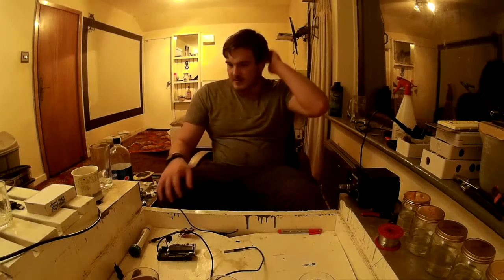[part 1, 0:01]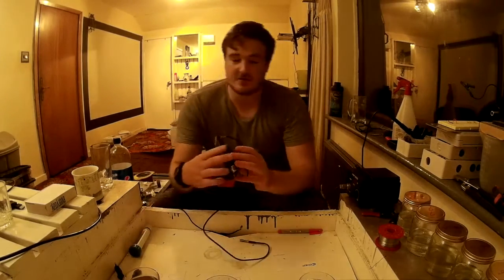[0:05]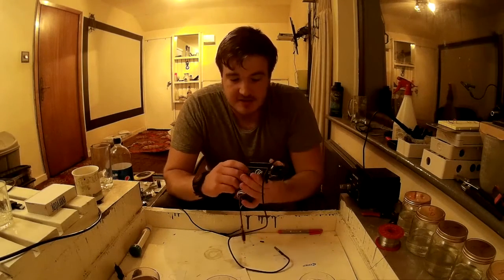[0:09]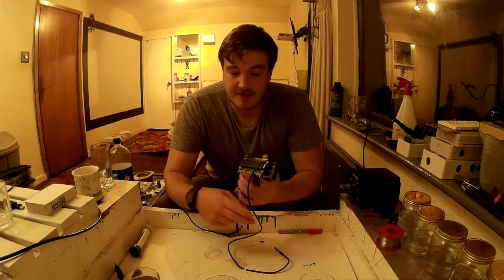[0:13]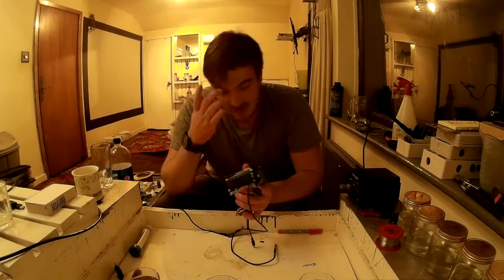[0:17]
This is Michael Ratcliffe, and this is just an updated version of the EC meter. What we've done here, we've added an LCD screen with buttons as a graphical user interface. We now save the calibration values into EEPROM so it'll survive restarting it.
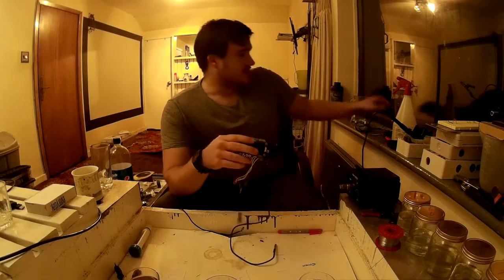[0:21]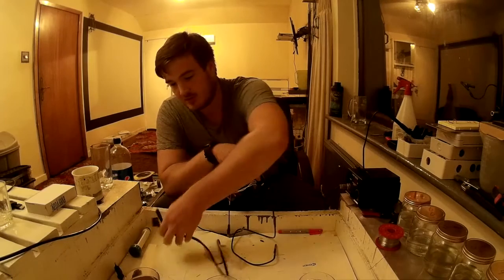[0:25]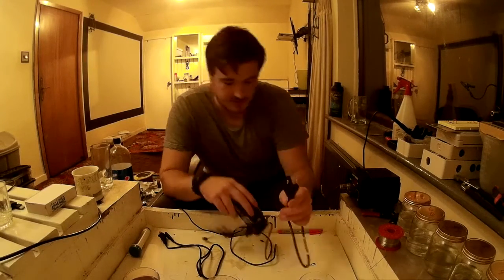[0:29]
And we've added support for... We had support for the American plug. Now we've got support for the European plug as well. You wire it up like on the diagram that's on the screen now.
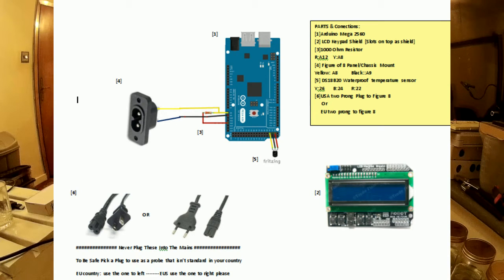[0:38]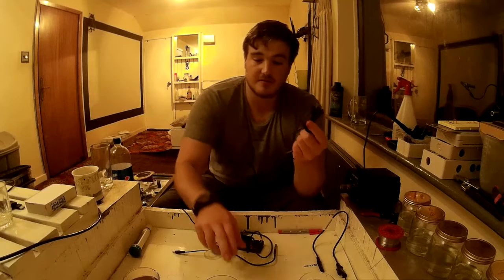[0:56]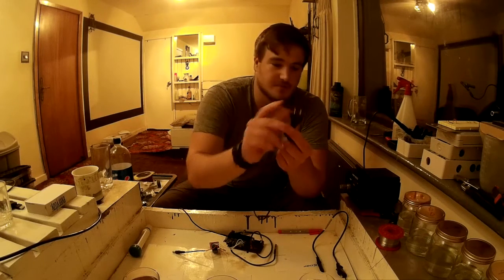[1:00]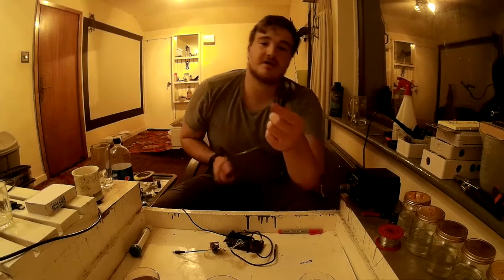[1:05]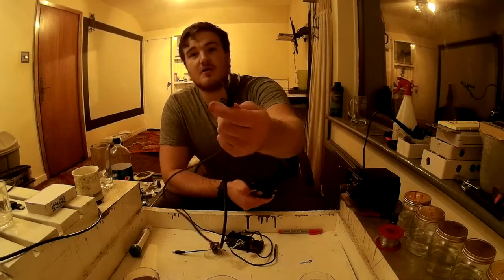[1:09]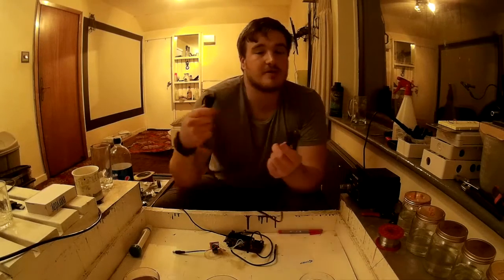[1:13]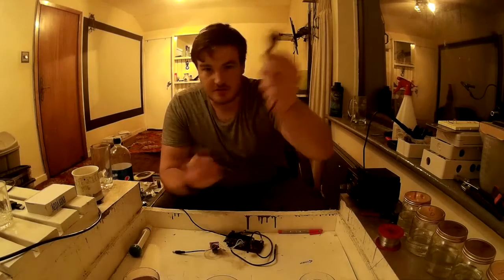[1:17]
The way it works is it measures the EC and PPM, the nutrient strength of water, by measuring the resistance between these two pins on either the American or the European plug. Now, because this goes to the analog pin, as you can see, you never want to plug this into the wall. So if you're in America, I recommend using the European plug. If you're in Europe, I recommend using the American plug, just so you've got no sockets you can plug it into and there's less chance of a mistake.
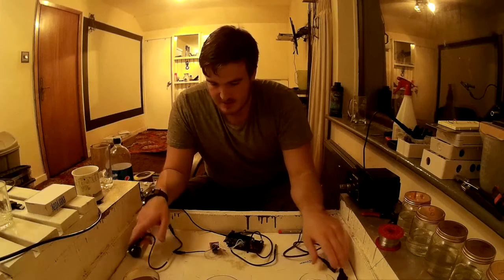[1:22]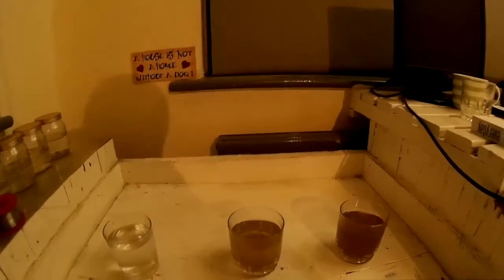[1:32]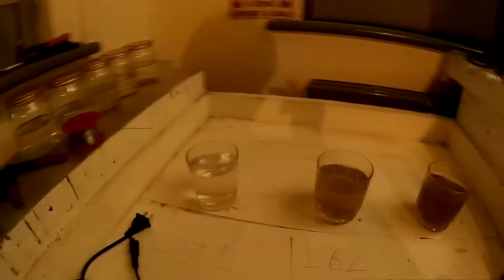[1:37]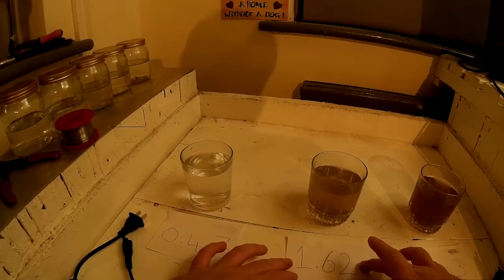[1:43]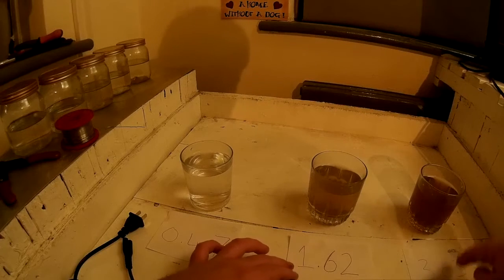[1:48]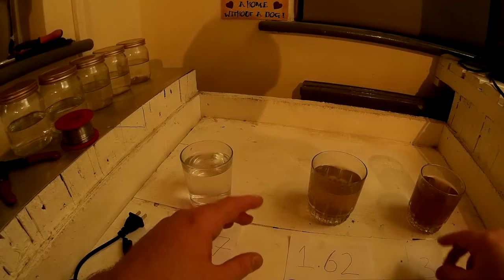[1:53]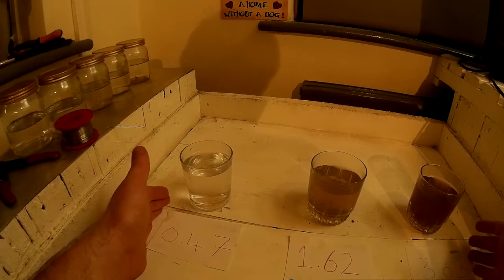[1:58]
Now let's have a look at what we've got here. If you want to see any other stuff, follow the link to the original blog where we talk about the theory about how it works. What we've got: tap water, middle strength nutrient solution, and a high strength. The EC is just a number to say it's electrical conductivity. Pretty much, if you're growing in aquaponics, this is the maximum range you're ever going to see.
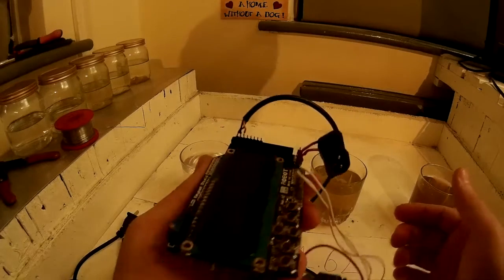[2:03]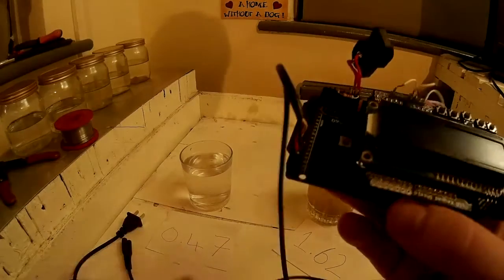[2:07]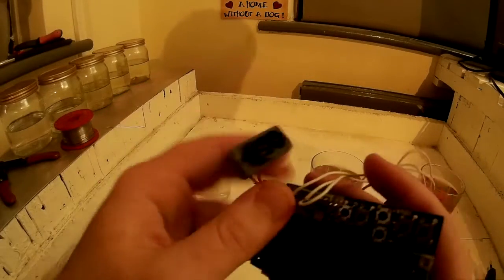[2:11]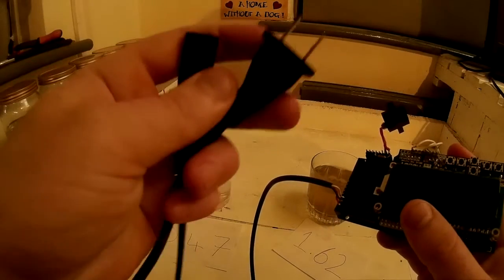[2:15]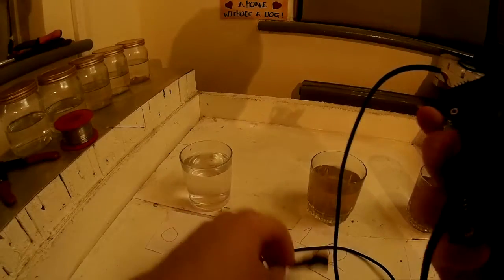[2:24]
So let's talk about the probe. What's it got? It's got a waterproof temperature sensor wired up to the digital pins. It's got a voltage divider and a figure of eight gland on. So when you get these plugs, you want an American two prong on one side or the European two prong and a figure of eight on the other, so we can quickly plug in probes like that. Because if these were fixed, we won't quickly be able to take them out and replace them.
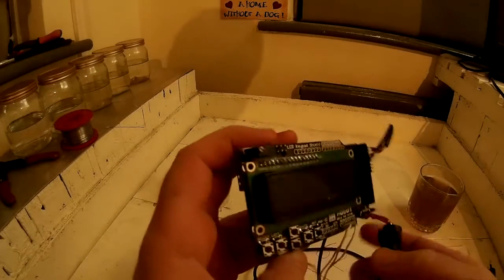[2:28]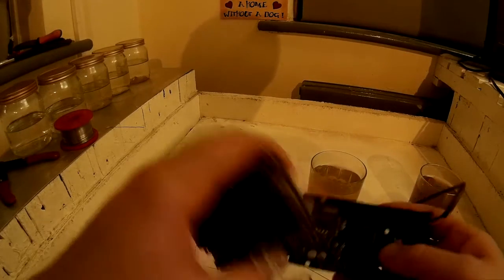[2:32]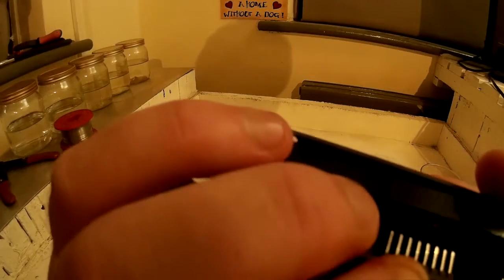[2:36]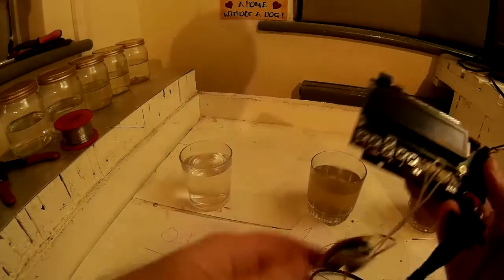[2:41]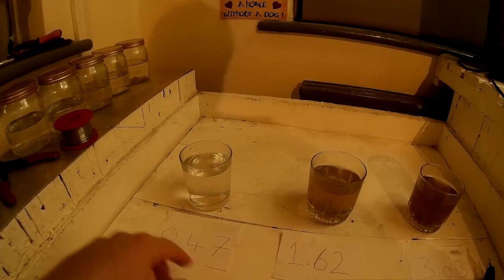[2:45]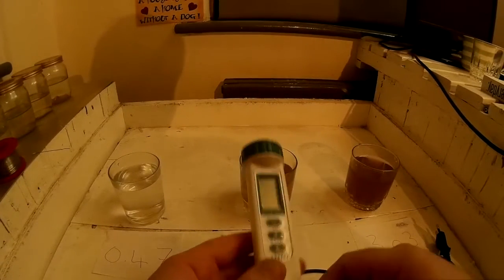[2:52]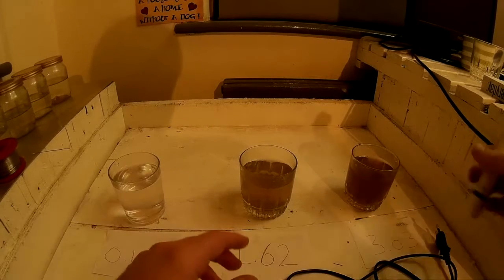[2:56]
The LCD shield's just a generic LCD shield with buttons. You need the one with buttons, it just pops off and on like that. Very easy. Very cheap as well, just I think $3 on eBay will get you one. So let's pop it into the middle one. These values are calculated using this commercial TDS meter. It's not been calibrated in a while, but it gives a good indication of what values we should expect.
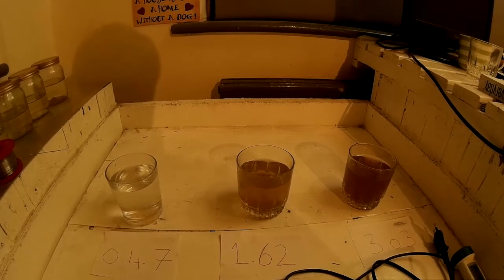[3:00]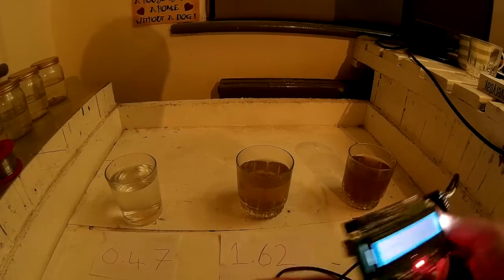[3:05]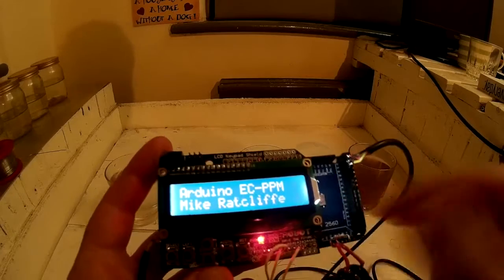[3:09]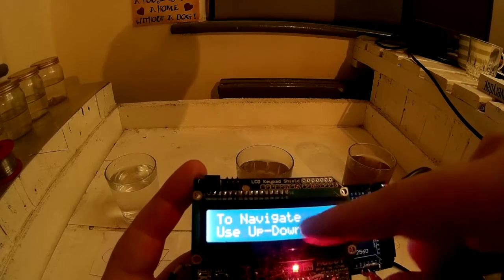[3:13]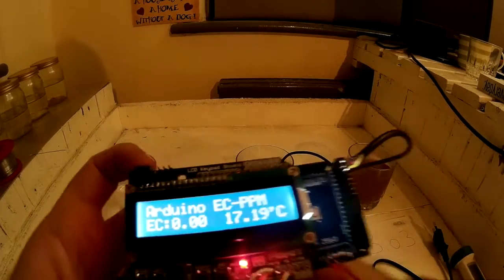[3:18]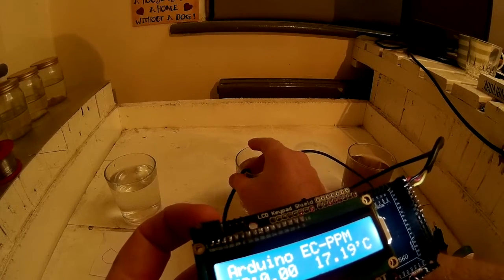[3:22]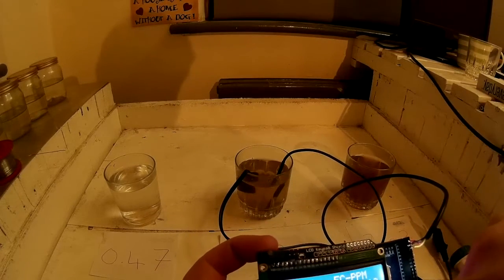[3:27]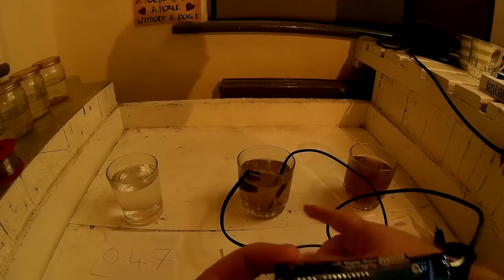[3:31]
So take your power and plug it into your Arduino. And the startup routine should be like that. Tells you what it's doing, how to calibrate it, and how to navigate. So let's drop the temperature probe in there. And the EC probe. Now this is saying 1.57, as you can see. It's 1.62, so it's pretty close.
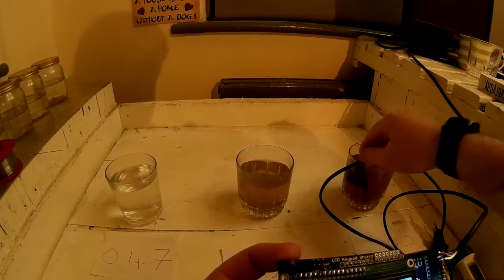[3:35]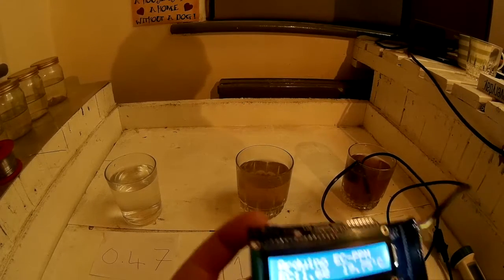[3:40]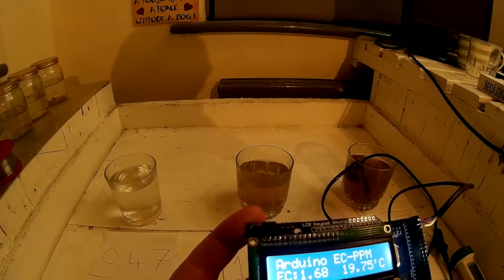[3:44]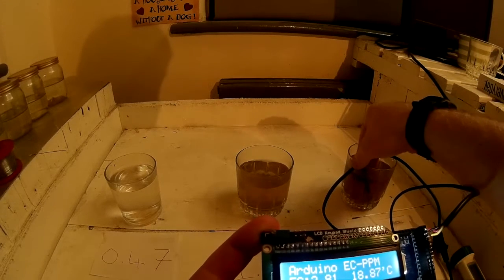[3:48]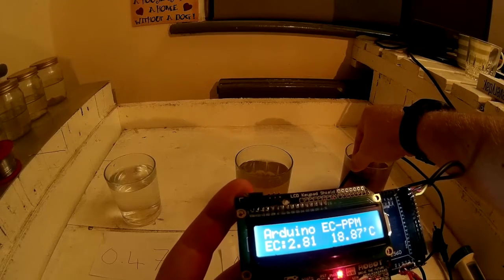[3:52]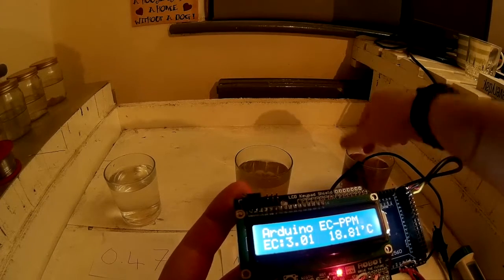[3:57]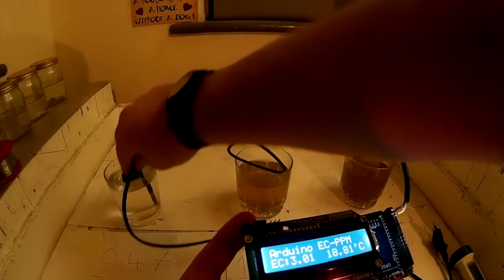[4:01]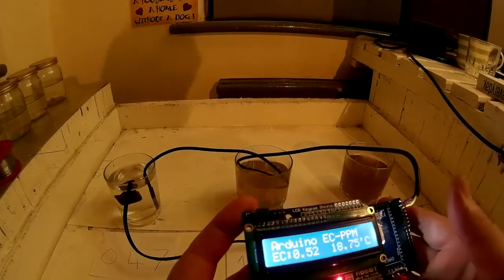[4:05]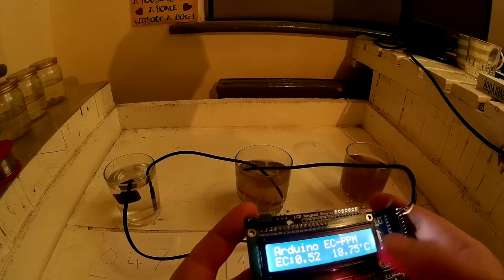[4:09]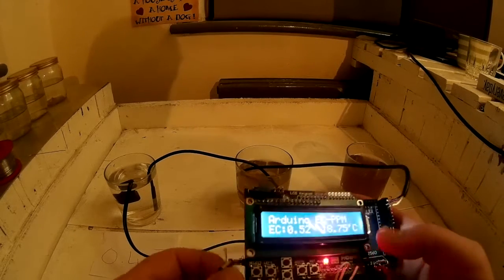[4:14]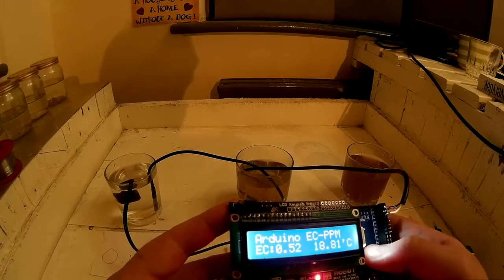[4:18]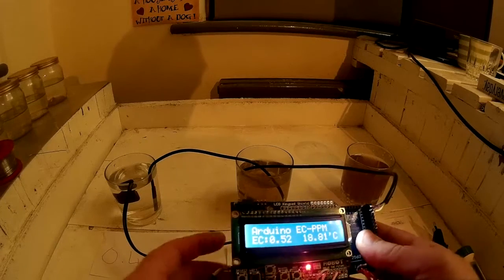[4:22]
The next one, it should change to 3.0. Let's give it a bit of time to settle the temperature. 3.01, almost bang on. And this one to the far left, we're just putting it in, should be 0.5-ish. Well, 0.47. 0.52. It's not too far off. So as you can see, it does work quite well. Now, we've also programmed the calibration value to be stored in the EEPROM. So if you power this off and power it back on, it'll still be calibrated, which is quite useful.
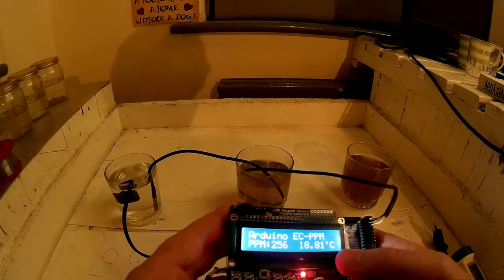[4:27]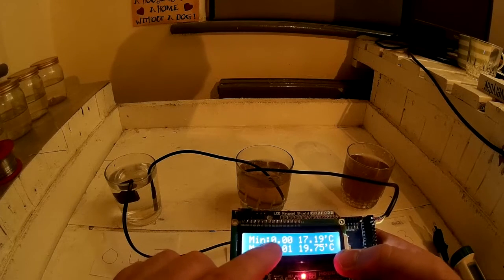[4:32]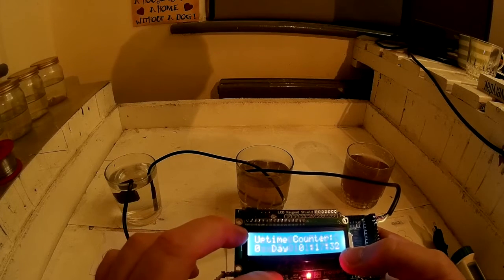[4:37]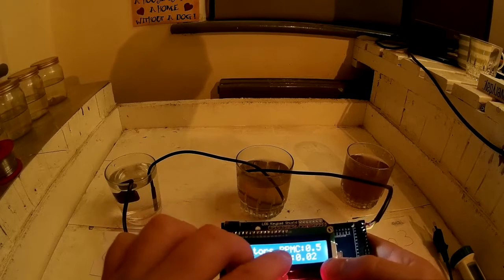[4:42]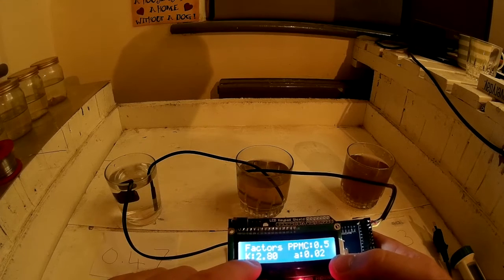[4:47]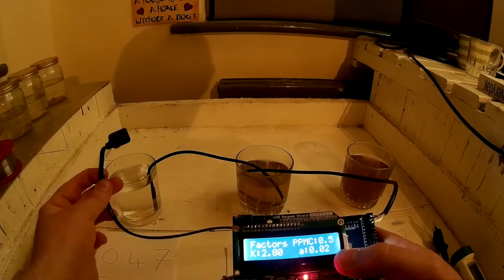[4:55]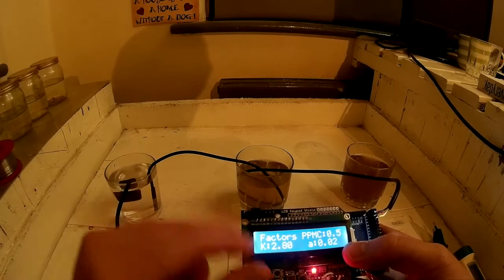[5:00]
Let's just run through what the options are. If you click up, first reading, it'll tell you the PPM, the minimum EC it's read, and the minimum and maximum temperature, an uptime counter so you know if that data is relevant, and these are the factors. So that's your PPM conversion factor, that's I think the Australian one. This is your calibration factor for the probe, 2.8, which is very similar to the other American style plug I got, which I cut the end off. So you can say that they're pretty similar.
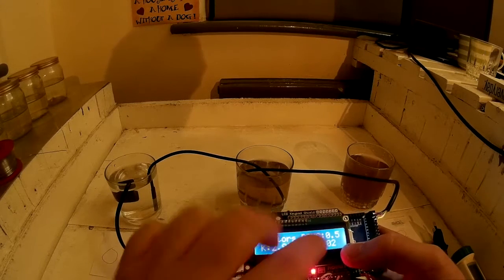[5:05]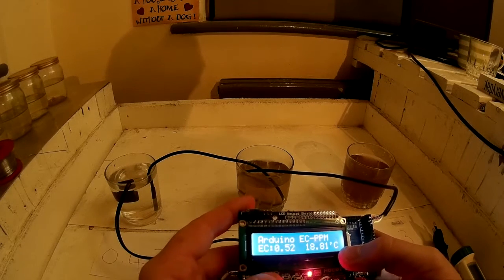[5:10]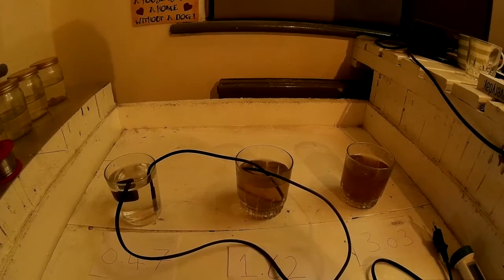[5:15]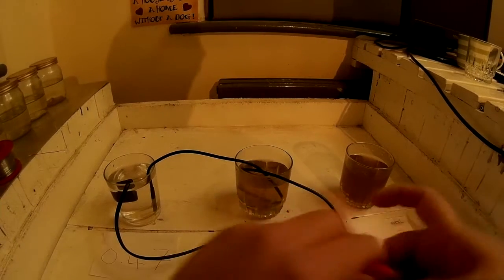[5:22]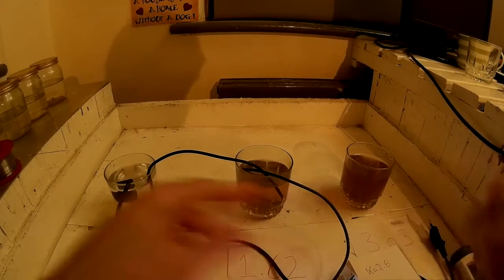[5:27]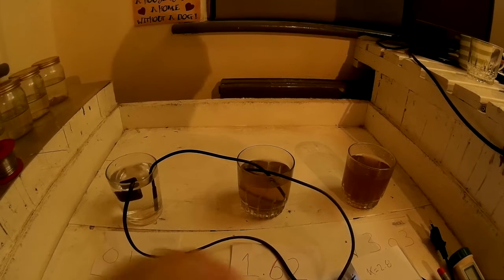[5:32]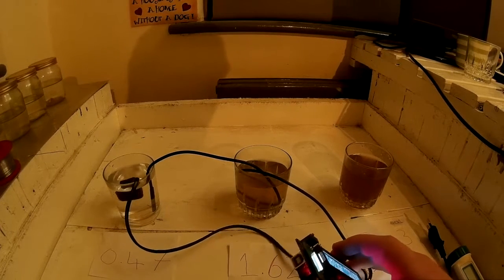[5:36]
And this is the temperature coefficient. You can stick with these two as standard, and this one's the one you're going to change. So what's the K value there? K value is 2.8. Just to check that this value gets stored in EEPROM, we'll write it down here, 2.8. Now let's try with the American probe, with the European probe, sorry.
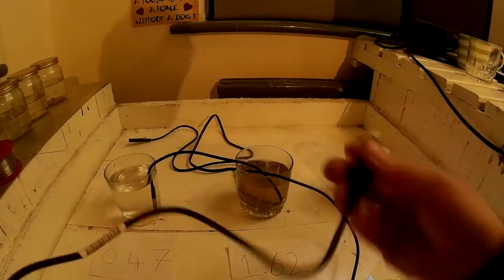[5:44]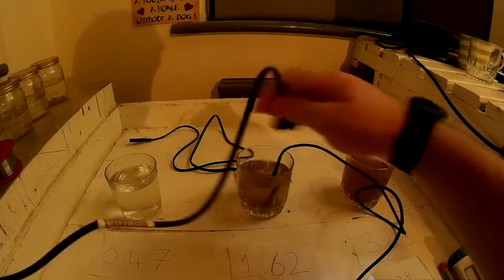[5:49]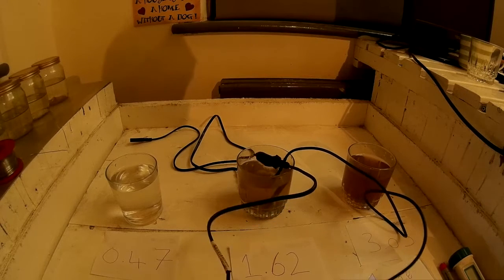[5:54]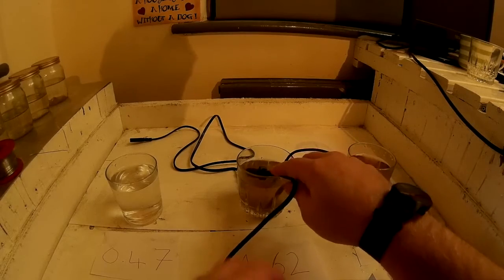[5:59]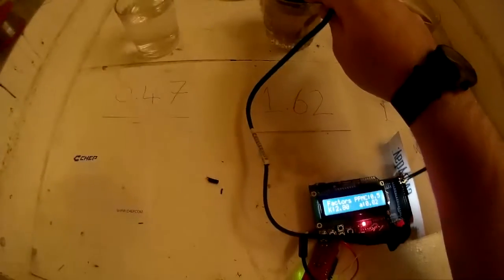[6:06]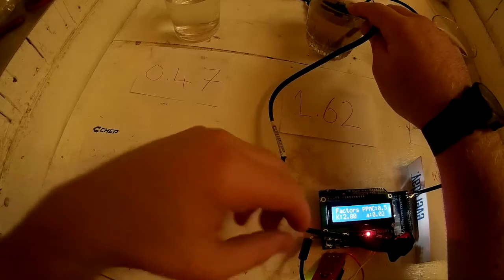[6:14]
So let's unplug the American plug and move it over there. Now we're going to plug the American plug in and calibrate it in this one, because you want to calibrate in the middle value you expect to see. So when you started this up, it said hold select to calibrate. So we'll hold the select button once I get the camera steady.
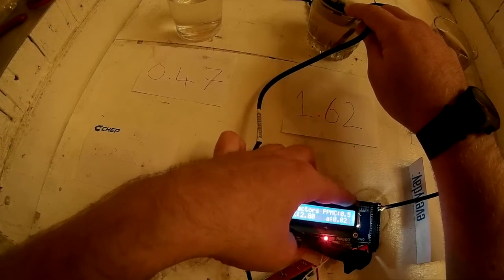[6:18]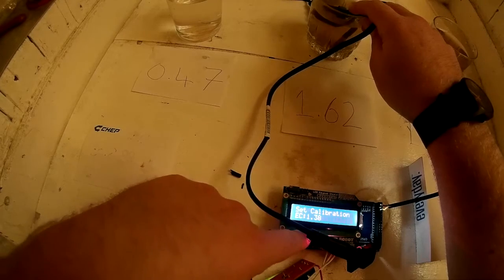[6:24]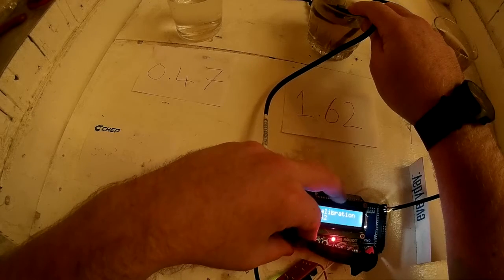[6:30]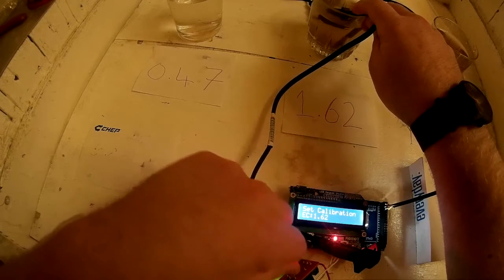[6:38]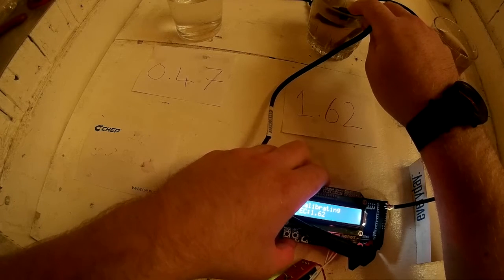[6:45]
Set calibration. So we press up and down. We're calibrating it in 1.6. So we just keep pressing up until it equals 1.6. 1.62, and then we click right to calibrate. So it's saying it's calibrating. This will take 60 seconds, so I'm going to cut the video and make it come back on in 60 seconds.
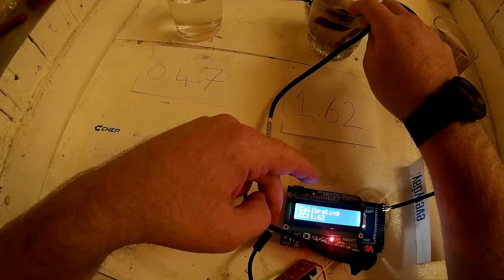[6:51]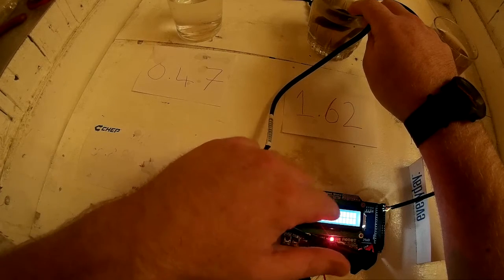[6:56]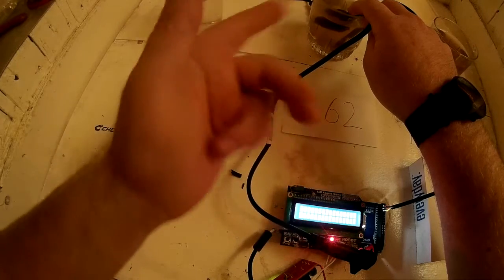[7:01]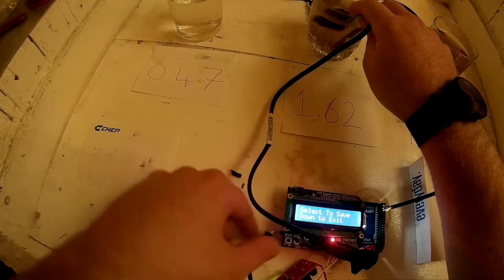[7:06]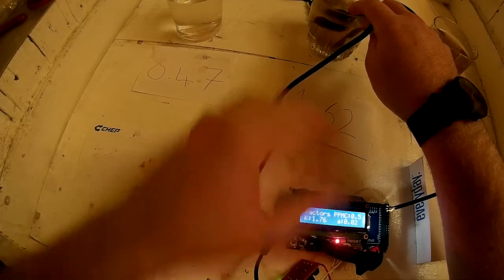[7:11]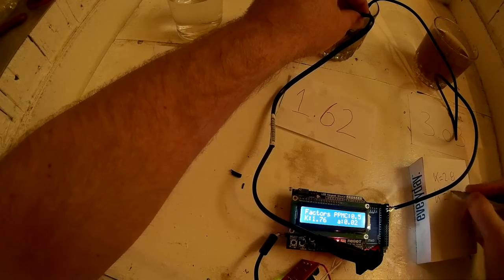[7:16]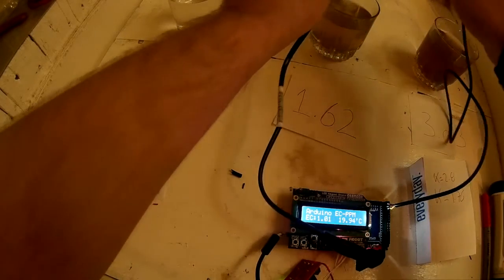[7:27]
Right, so it's calibrated, so it's telling us good result. The new K value, the cell constant, is 1.76 because it's a completely different probe. Good result. Select to save, so we press select and it's saved the calibration as 1.76. So let's just note that down. The new K is equal to 1.76. And click back down to get to EC. So what's it saying? The EC is 1.64. It should be because we calibrated.
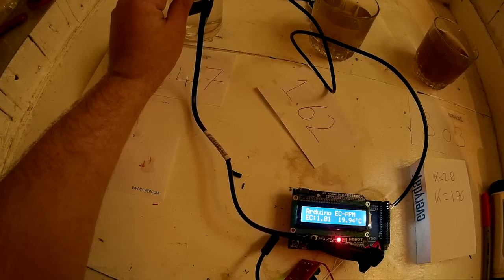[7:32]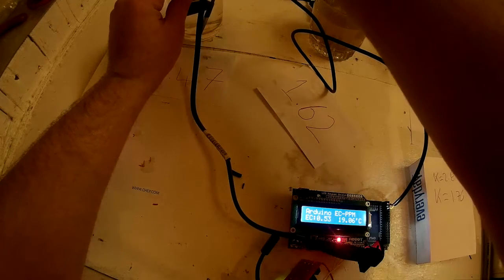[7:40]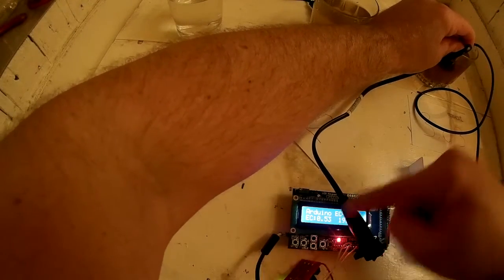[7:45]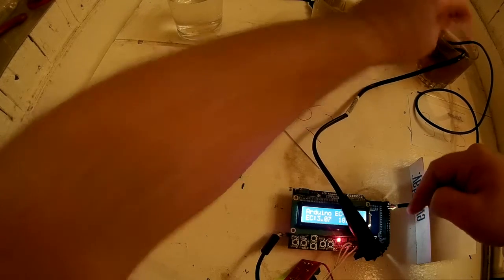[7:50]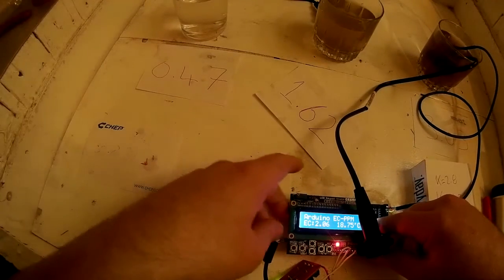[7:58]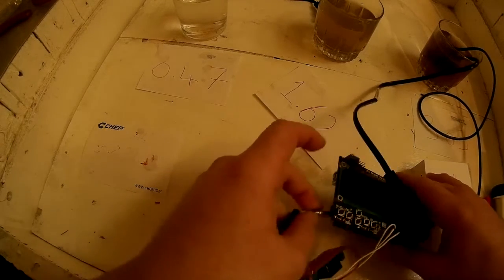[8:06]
Let's try the 0.47. So as you can see, it's pretty close. And let's try it in the solution of 3. That value now should change to 3, which it has. So once it calibrates, it runs quite well. Now let's just double check the EEPROM thing is working. We'll press the main reset button on the Arduino board. If it worked. We'll just unpower it and power it back on.
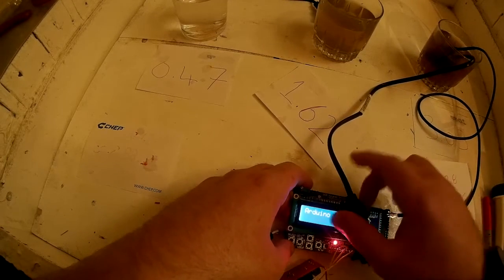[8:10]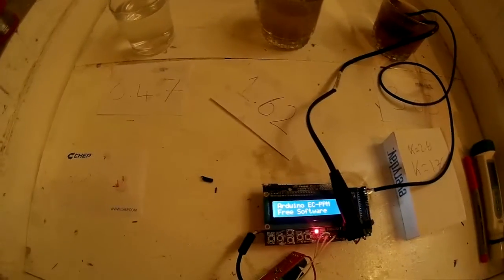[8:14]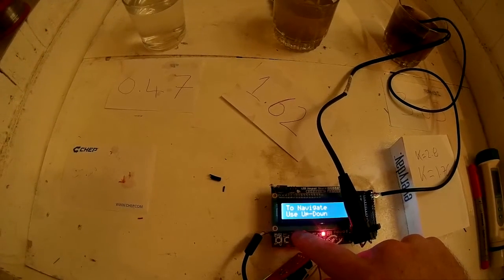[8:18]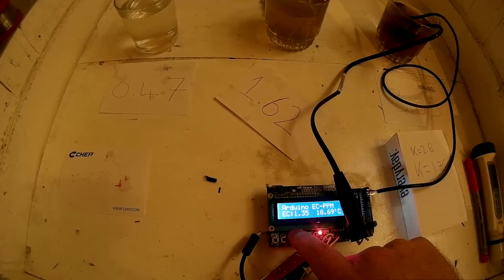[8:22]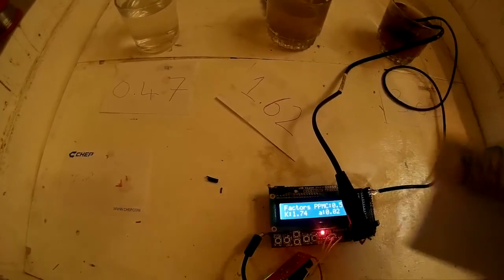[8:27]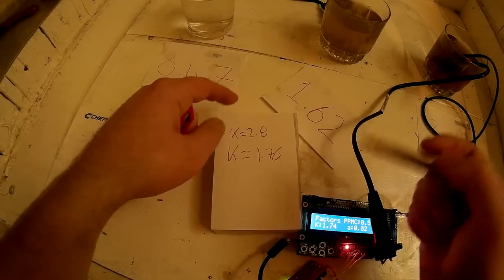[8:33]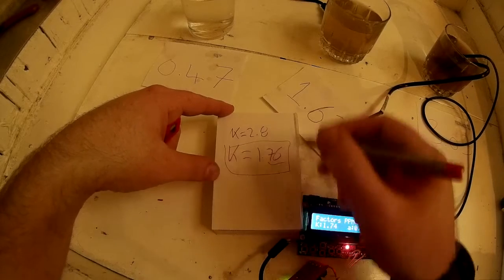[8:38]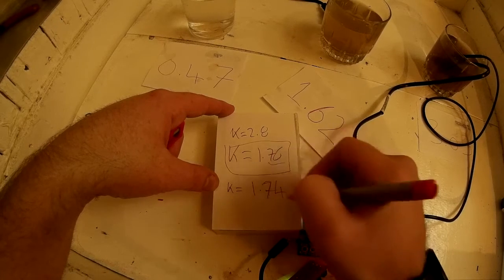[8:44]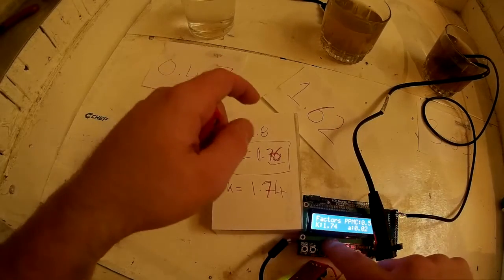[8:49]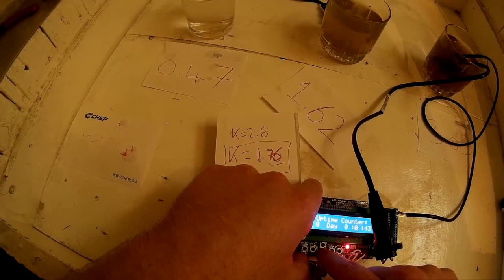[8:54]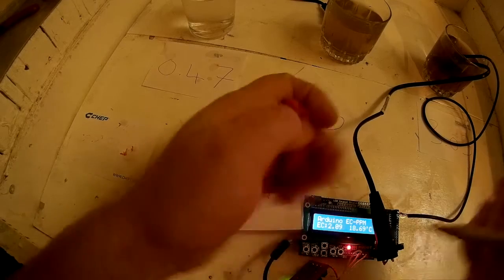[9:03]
Let's run right up to the top. The K value is 1.76. We put it in as that, and because we're saving in EEPROM as an int, times by a constant, it's lost a bit of fidelity. So this is the actual cell constant, but it thinks that it's 1.74, which is a very small difference. So we know the EEPROM saving is working. You're just going to have to believe me that the uptime counter works, because I've not got time to make a video just watching the uptime counter climb.
Anyway, thanks for watching the video. So now you've got two probes you can choose from, and an Arduino which saves the calibration value. And in the next tutorial we'll be making a self-learning nutrient doser from this. So that means you'll have a self-learning nutrient doser for your hydroponics unit for around $15, which is much cheaper than the commercial unit. Watch the next video.
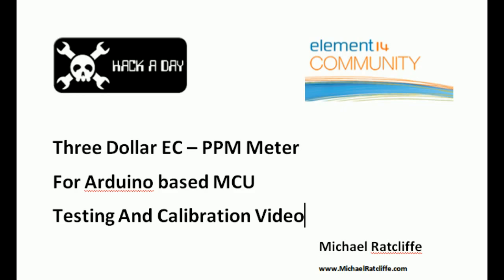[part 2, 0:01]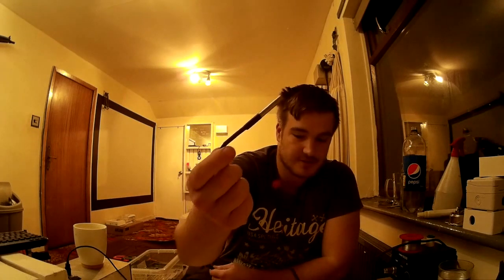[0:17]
Hello, this is Michael Ratcliffe, and today I'm going to be showing you how to make an Arduino based EC meter for £2. What you'll need: a waterproof temperature probe. Everyone should have one of these. If you don't have one, you should order 10. And an American style 2-prong plug as an EC sensor.
Because these are sold all around the world as a good standard, the pins will always be the same distance apart. They'll always be the same sort of stainless steel material, so they're pretty standard. So when I calibrate this, you should be able to make the exact same one anywhere in the world, and the calibration will stand roughly. You can calibrate your own if you want, like I'm going to do in the video now, but if you just want something that'll plug and play and be about right, you won't even need to calibrate it.
Follow the wiring diagram on how to wire it up. I recommend getting an extension lead with the American plug on one end and this on the other, and buying the male or female, I can't remember which one it is, counterpart to this figure 8, so that when you want to change the EC probe, you don't have to resolder onto a header. You just unplug this and plug your new one in to decrease downtime. Now, I've got one in the post, but for now, because this was just proof of concept, we're using this.
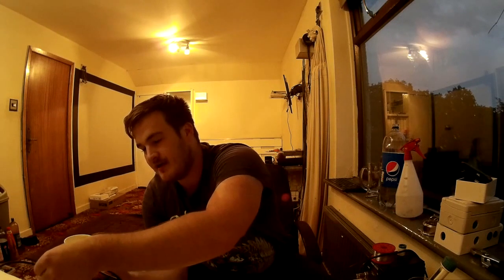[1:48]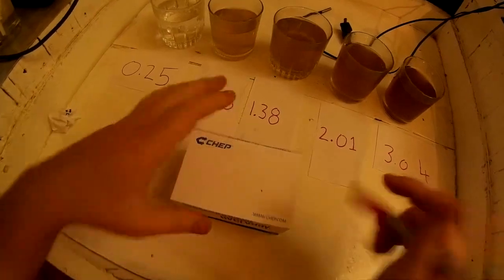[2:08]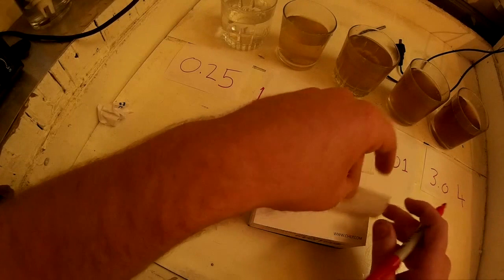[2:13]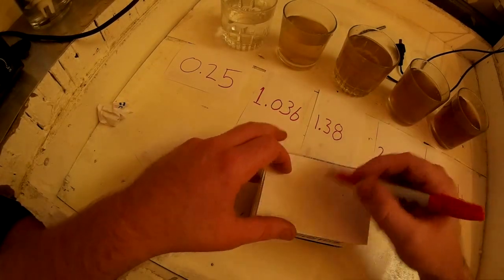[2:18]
Now, usually you can't measure EC using DC probes because you polarise the water as soon as you do. And by polarise the water, we mean you move the ions in the water, so you can't take a DC measurement. Let's just plot what happens if you try to take a DC measurement of water EC.
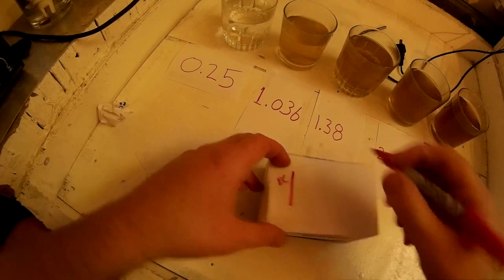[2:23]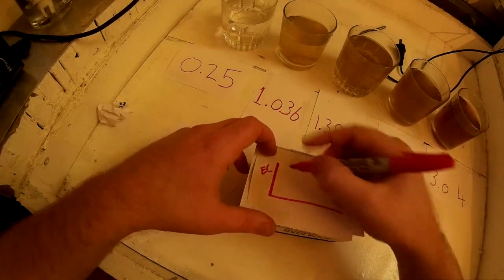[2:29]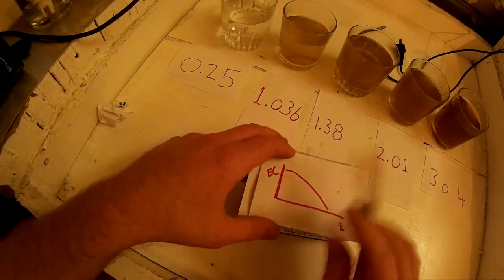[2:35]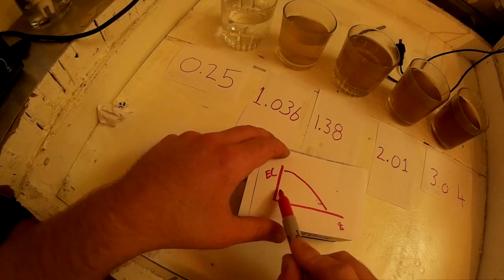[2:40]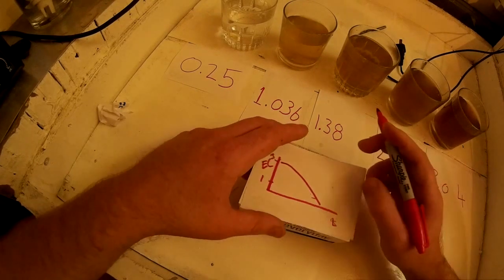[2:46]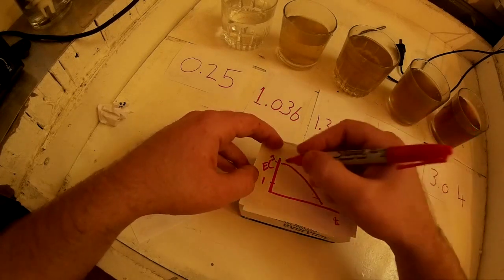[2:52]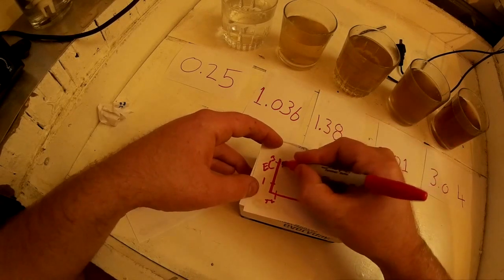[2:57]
This is your EC measurement, your resistance of the water. I can't remember whether it's a positive or negative relationship, but this quickly happens when you try and take a reading, and this is time. So if you just try to take a DC reading and left it turned on, your EC reading would be wrong, because it would tell you there's an EC of, I don't know, 1, when in fact it's 3. So we get around this by connecting the EC meter to the digital pins of the Arduino, turning power on just for this short period here. So we turn the power on, take a reading quick, and turn it off, so this bit doesn't happen anymore.
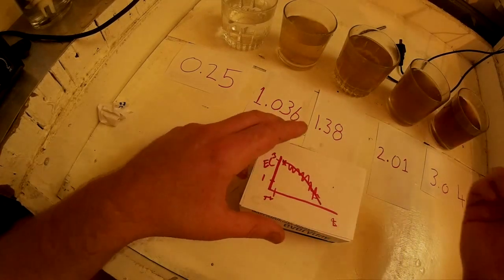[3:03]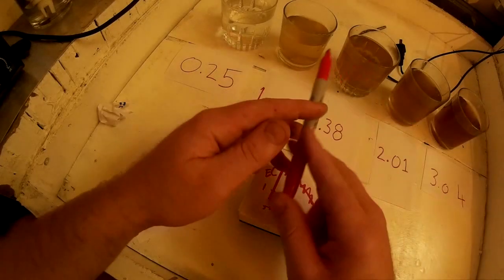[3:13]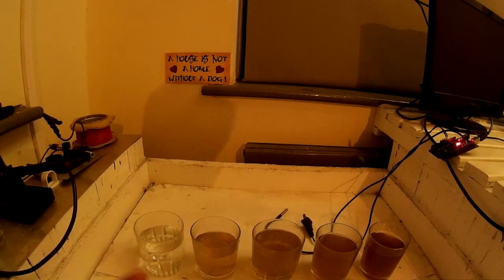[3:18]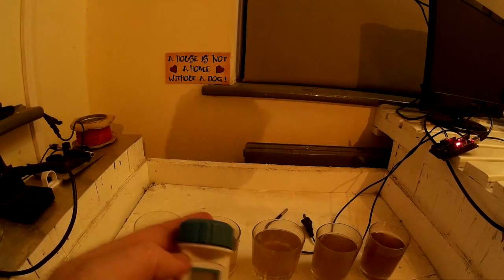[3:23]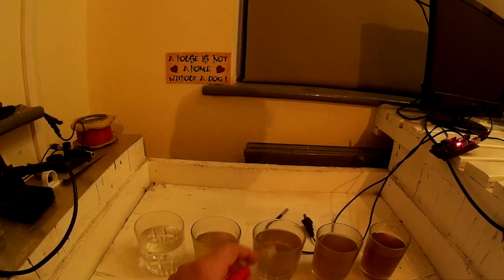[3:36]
The wiring diagram will be on the screen now, and just to show that it works, right in front of me here I have got a range of water samples. We've got my tap water, which using this meter here is 0.25 EC, a 1.38, which is quite a common strength for calibrating EC meters, which we'll be doing now.
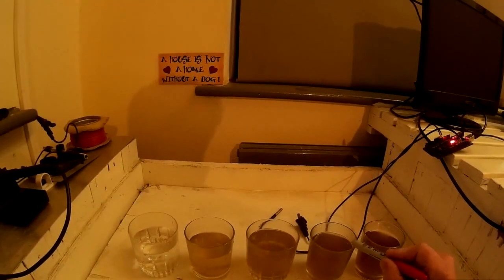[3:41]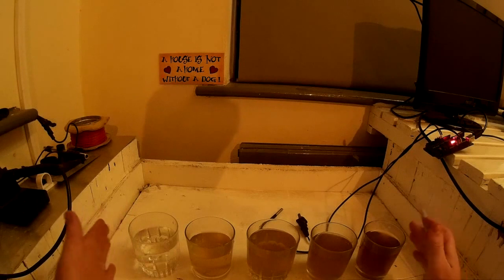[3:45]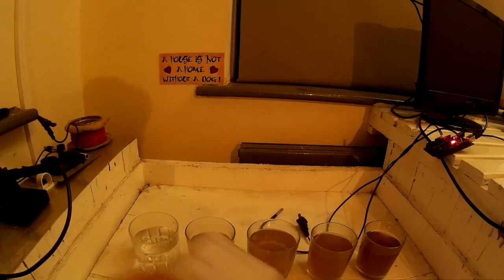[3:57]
You've got your 2.01 and your 3, so this is the range of measurements you're going to see in your aquaponics pond or hydroponics. You're never really going to go above 3. This is the range that you're measuring. So let's start by calibrating it.
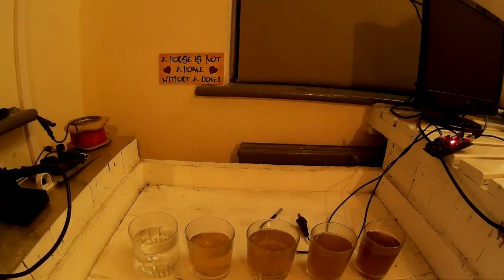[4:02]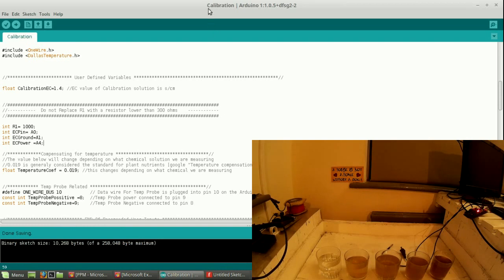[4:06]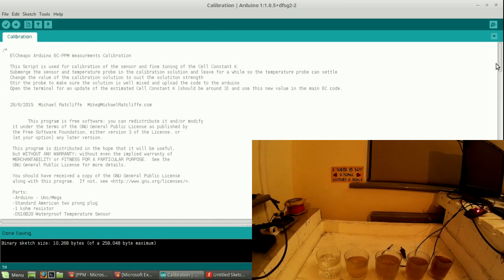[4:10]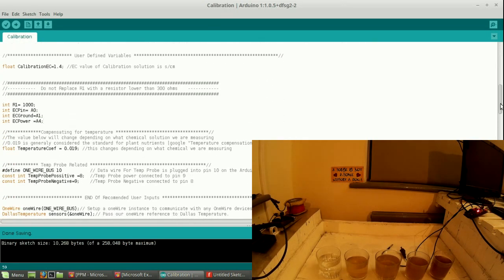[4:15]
What you do is you go to your Arduino, you go to your computer, you open your calibration one. Read the code, it's just generally good practice to know what it's doing. And if you've wired it up like the wiring diagram I showed you a second ago, all the pins will be right. The only thing we're changing is this calibration EC, which is the EC of the fluid we're going to calibrate with. So we said it's 1.38.
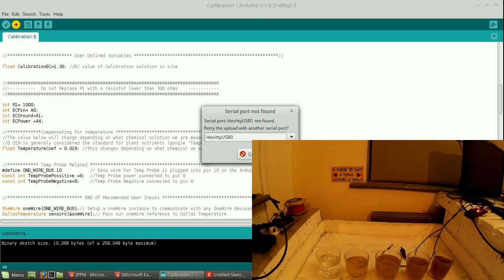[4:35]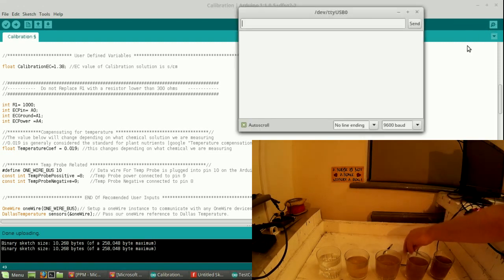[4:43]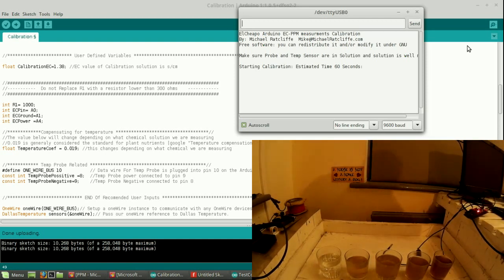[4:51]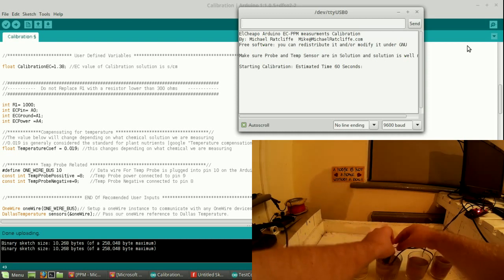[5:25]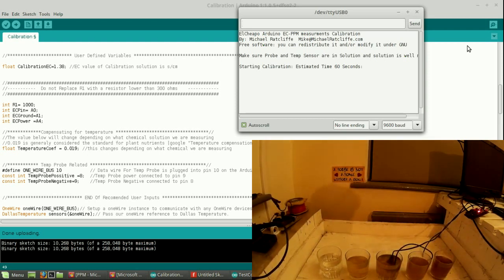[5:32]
Now you don't want this probe touching the glass, because the boundary layer will give you bad readings. You need to hold it in, just floating, like you would in your main tank. It takes about 60 seconds to get the reading. The first reading's going to be rubbish because we didn't put the prongs in. Let's just bend that so it stays in without touching the side.
And what this will do is tell us the calibration. It'll tell us a K value which we use in the main code. So about now it should have given me my K value. The first one was wrong because we hadn't had the probe in the solution. Right, so we've got our first stable reading. If you look, the first 4 had errors because the temperature probe had not settled yet. So our K value is 2.83.
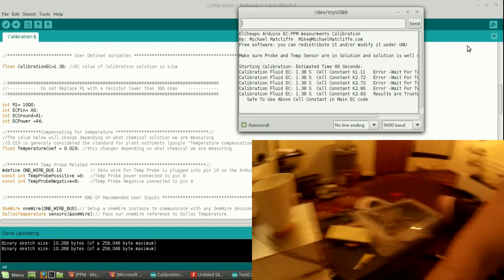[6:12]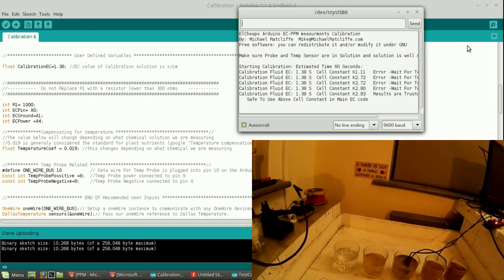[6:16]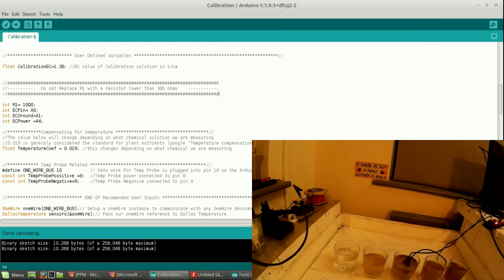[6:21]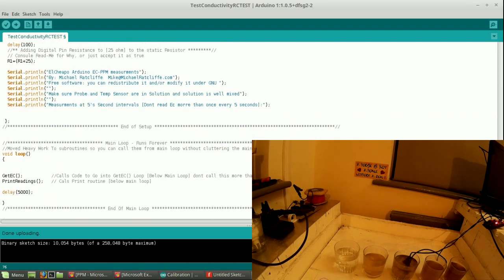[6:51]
So what we do with that is we go back to the computer, open the main test conductivity test, just check it compiles. Again, read through the code so you know what it's doing. But the main one that we're converting here is, we come down here to the cell constant, and our cell constant is 2.83. Compile the code, upload the code, and now it's uploaded, so it should be running.
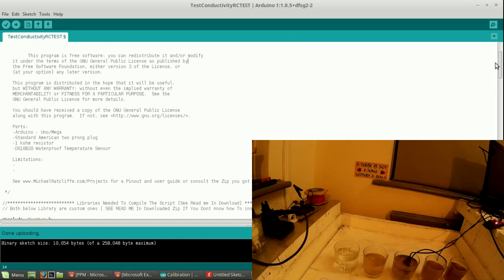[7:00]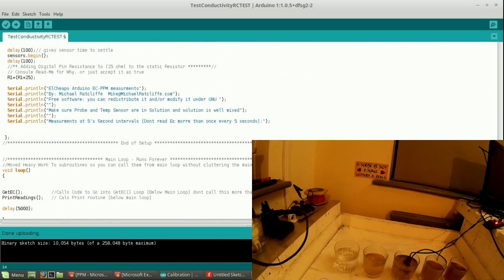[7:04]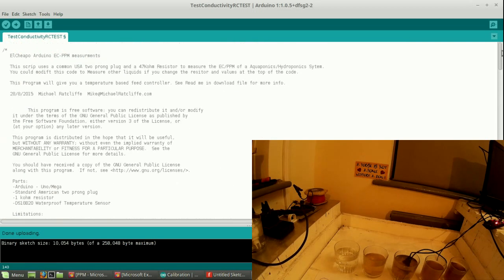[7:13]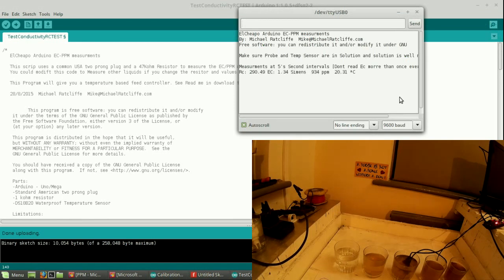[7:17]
Just while I'm here, I'll tell you one or two things about the code. Like the polarization we were talking about earlier, you can't measure the EC more than once every 5 seconds. So if you go down to the main loop here, don't call this get EC more than once every 5 seconds or you'll get bad readings. Anything over 5 seconds and there's no problem. Open the serial monitor.
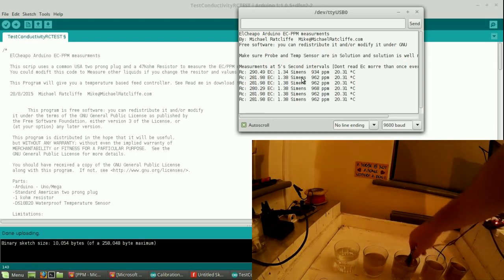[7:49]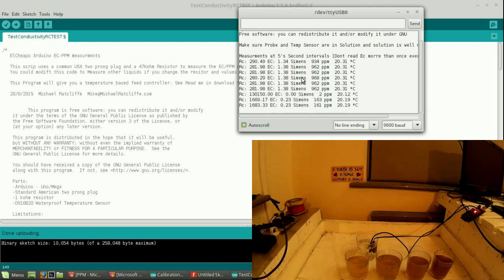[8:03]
And if you look here, the first reading's always garbage. The second one, it's given us an EC reading of 1.38 like you would expect. So take your probe. I'm just going to show you that it works for all the others. We'll start at the tap water, which is over here. So we've just placed it into the tap water, and our reading now should be 0.25. It's 0.23, close enough.
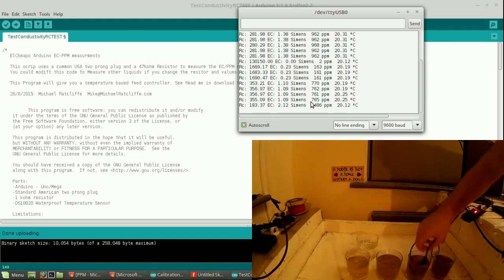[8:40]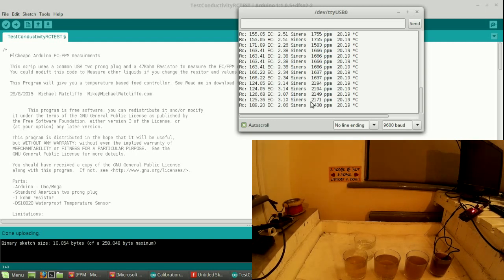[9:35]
Into the 1.036, and our reading is 1.09. We've already done the 1.38, so we'll put it into the 2.01. And we're getting 2.06. And into the 3.04. Again, stir it up so you know you're getting a coherent reading. Who's touching the glass? It's giving us a reading of 3.07.
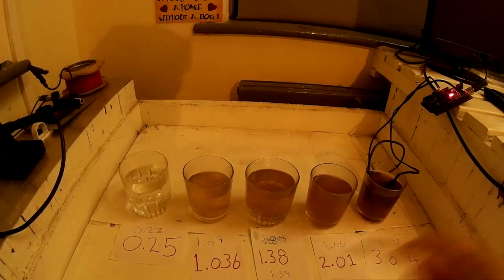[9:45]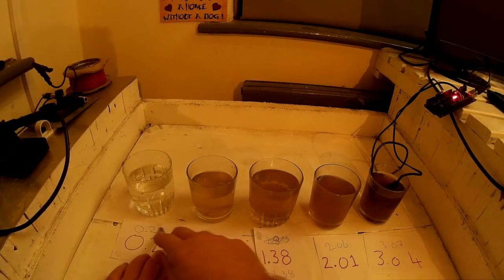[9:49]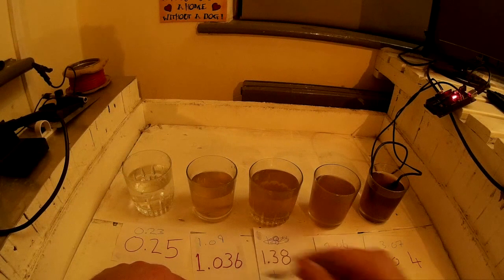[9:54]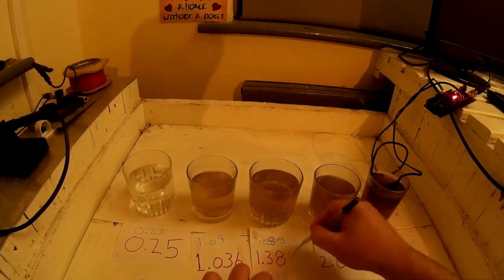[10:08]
Right, so here are the readings that we got from the Arduino. The ones in red are the ones from the EC meter. The ones from the Arduino, so 0.25, 0.23, close. Bang on, because this is the one that we calibrated against, so that's what you'd expect. 2.01, 2.06, very close, 3.04, 3.07, very close. So they all pass the test and it works.
As you've just seen, the code works. For the temperature compensation, you're just going to have to believe me, it works because I have tested it. Now, I'm going to stress again, you can't call the EC function more than once every 5 seconds because you'll degrade the probe and get bad readings. Calling it once every 5 seconds, I've left it running for 24 hours without seeing any change in the readings. So it seems that once every 5 seconds is okay.
Now, as for the probe, it's an American style 2-prong plug, just generic. The good thing about this is anyone in the world can buy one of these plugs, and the calibration factor that we worked out to be like 2.8 will be the same for all of them. Now, because I'm not in America, I didn't have a lot of these plugs, so I had to cut one off and solder it onto a header.
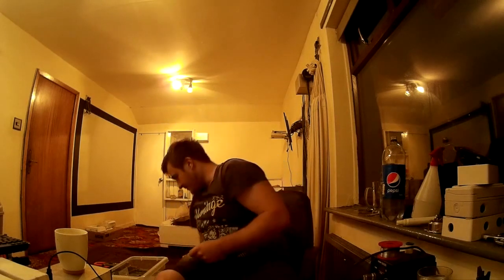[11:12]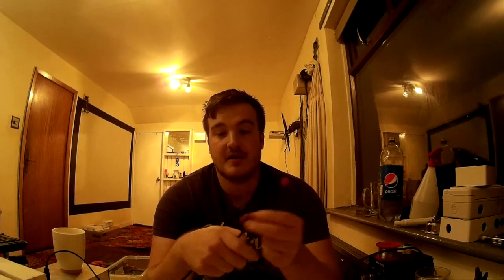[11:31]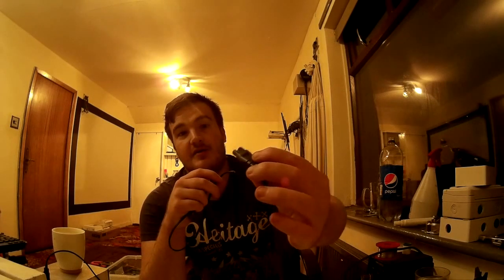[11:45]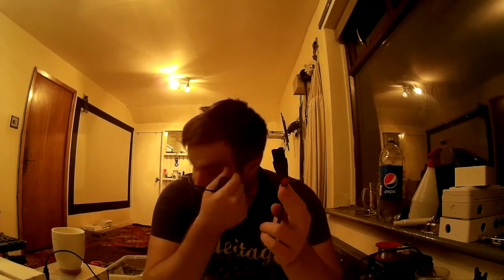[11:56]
But what I recommend doing, now because I'm in England, they're very cheap to buy on eBay. I've just ordered another one for £1 with one of these ends. So because these do wear out and I'll need to clean them and they're that cheap, I'm just going to swap them and throw them away. So to save having to solder onto a header each time, I'm going to solder this header onto the counterpart of this. So you just buy a plug extension, plug it into your case and unplug it and replace it whenever it does need replacing. So I recommend using this end and the female part on the Arduino.
Now, where I live, I've not got a plug I can plug this into, so that's not a problem for me. But if you're in America, you're going to have to make sure that nobody plugs this probe into the mains, because it'll put mains power to your analog pins and fry your Arduino straight away. But for me, that's not a problem, like I was saying.
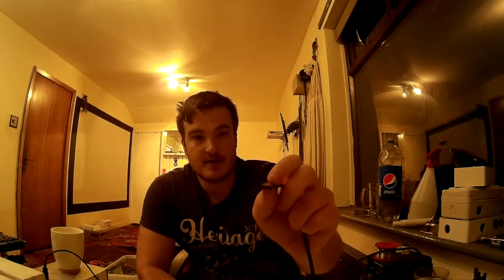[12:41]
Now, what other measurements could you do with this? We took the resistance of the digital pins into account. So you can't measure an EC over 3 with it because your digital pins just can't supply that much current. But you could measure by changing the resistor here. You could use it to measure the quality of drinking water as well by increasing the resistance.
Now, these plugs aren't completely sealed. Inside seeps a little bit of water and you get a little bit of resistance inside. It's in the megaohms range, so it won't affect us measuring these fluids. Very small effect, less than 0.1%. If you try to measure ultra pure water, it will become a factor and you'll have to take it into account in your calculations.
So there you have it, a $2 EC meter for your aquaponics, drinking water, hydroponics. Take a look at the code, read it through, because there are serious restrictions on what you can do with it. But what do you expect for £2?